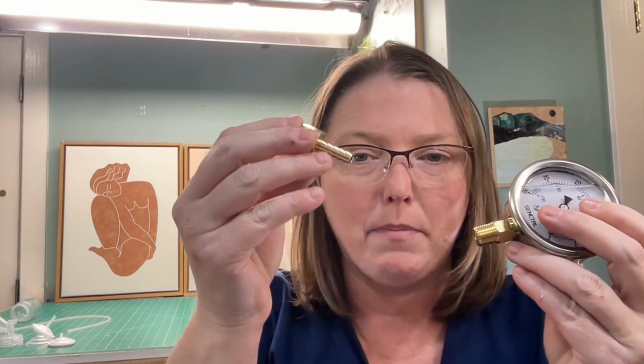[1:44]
Hi, my name is Avery Young, and in this video, I want to show you how to make a homemade pump gauge so that you can tell how strong the suction is in your pump and how well it's working for less than $20.
So lots of people have momentary drops in their supply at some point along their pumping and feeding relationship. And a lot of times that drop in supply can make us panic because we think that our milk supply is going away. And then we get into this doom spiral about what that means about our milk supply and our ability to feed our baby and all the bad things that come along with that.
So here's how you can make a gadget that can test how well your pump is working or how strong the suction is in your pump for under 20 bucks. What you need is a pump gauge, which is specifically a vacuum gauge, because your pump is pulling air. And what we want to know is how hard or how strong is that pull or that suction that your pump is making.
So here's your pump and here's your gauge, and we just have to figure out a way to connect the two. So what we're going to do is get an adapter that makes a plug that lets us put it inside your pump flange. I'm probably going to make some of the names up. It'll totally be wrong, but I can put the links below, and I know what sizes I needed because I've tested a lot of them before I made this video. So I can make sure that you get started off on this a little bit easier than I did.
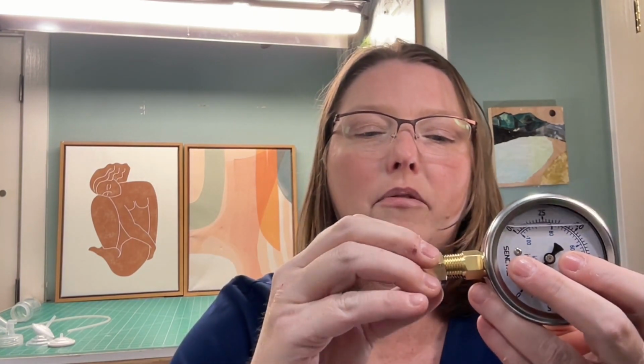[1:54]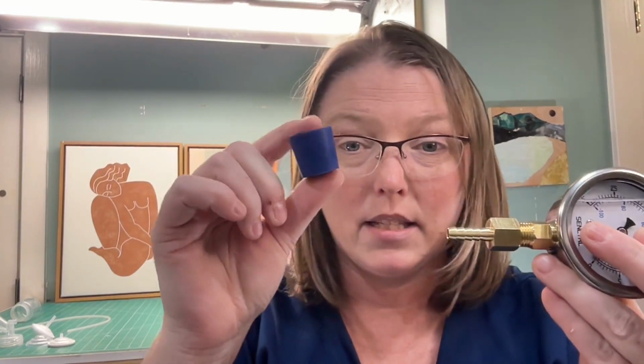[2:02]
So the first thing that you're going to need is a way to make this smaller so that we can fit this into the stopper that we're going to use to put this inside of our pump flange. This is called a coupler, I think. Specifically, it's a female coupler because it has a receiver, and this part over here is the male. It's barbed, and I wanted it to be barbed so it would stick into this stopper really well. And this is a fourth of an inch right here. So it's a fourth of an inch female that you can just screw right here on the bottom of this.
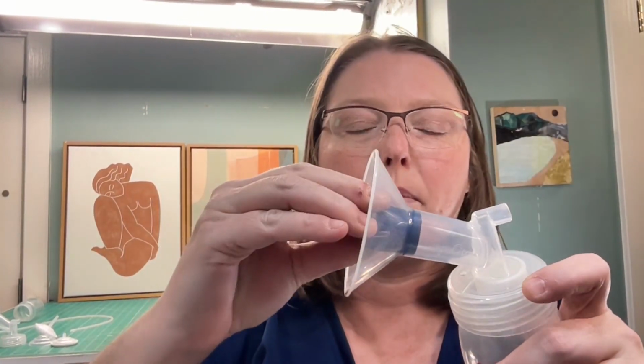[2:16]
The next thing that you're going to need is a stopper. We want to be able to put this into your pump flange and have it be a really nice snug fit so that no air is escaping around the sides. These stoppers come in different sizes, and I've tested those too and got them wrong. So I want to make sure I drop the sizes below so that you won't get them wrong.
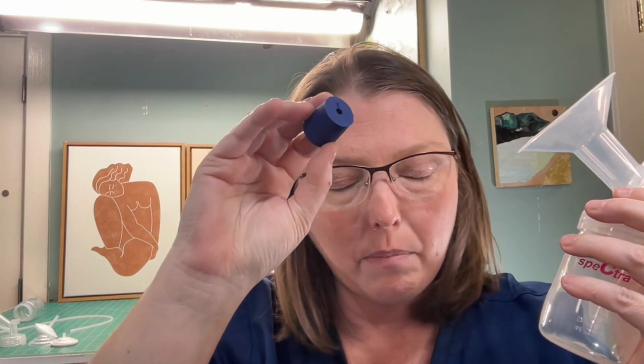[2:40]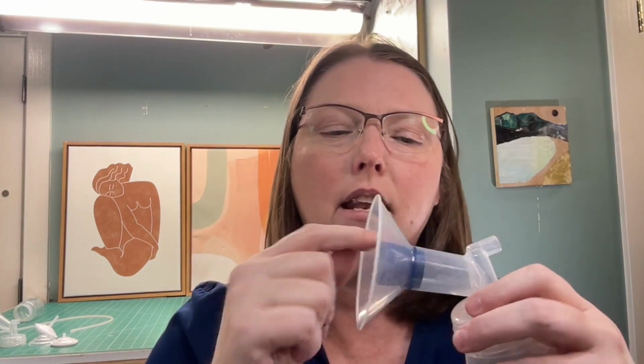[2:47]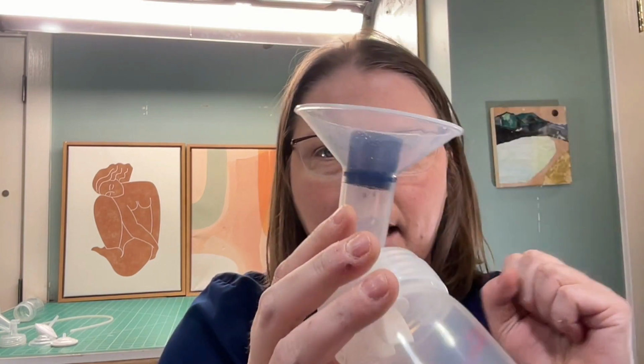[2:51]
In a standard 24 millimeter flange, which is what most pumps come with nowadays, the number 5 stopper right here fits very nicely into this. So it's really nice and snug, and then no air can escape around the side. And you can actually see around the ring that it's making a nice seal.
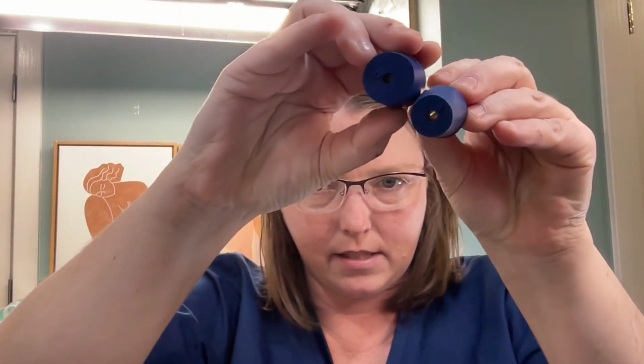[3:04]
Now, if you don't have a 24, if you've sized down and you've gotten rid of your smaller sizes, then you can also use a number 3. So this number 3 is much smaller. You can see the diameter difference between these. Can you see that? This one's smaller. So this one fits really well into flanges that are smaller than this. So you probably can go all the way down to like a 15 or so with this number 3. So having both of them can be handy if you're also a lactation consultant and you want to be able to test different sizes.
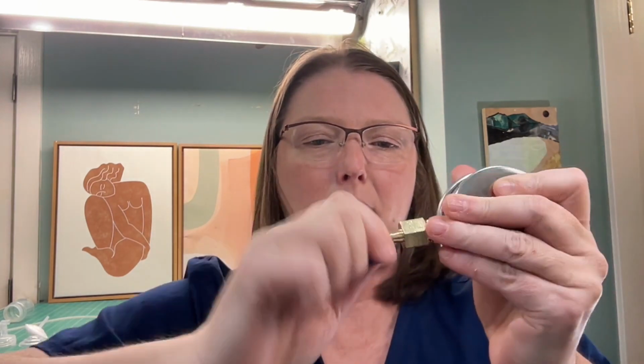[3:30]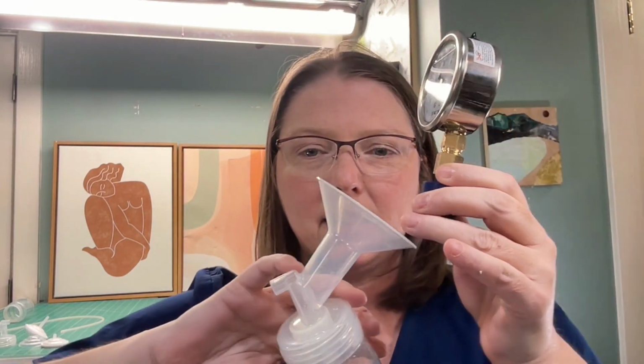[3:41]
So then all we need to do is take this stopper and put it on the barb. So we're going to do this, and I'm just going to twist it up here so that it's nice and snug. And when I've got it all the way in there and it's nice and snug, now I have a way to get this gauge snugly and securely into my pump flange like this. I'm going to push it in there nice and deep.
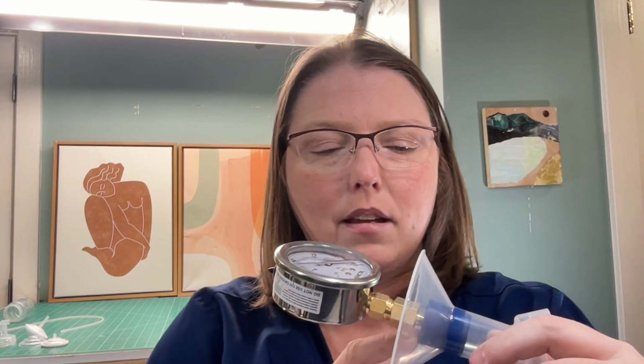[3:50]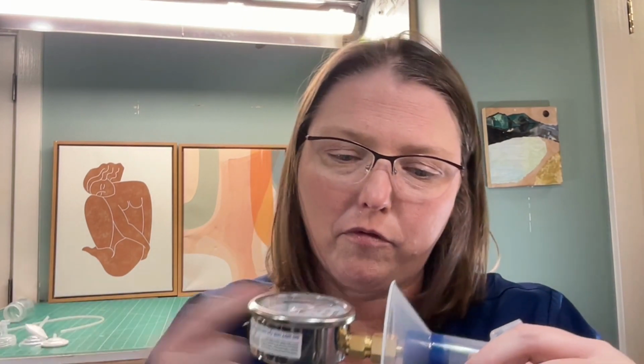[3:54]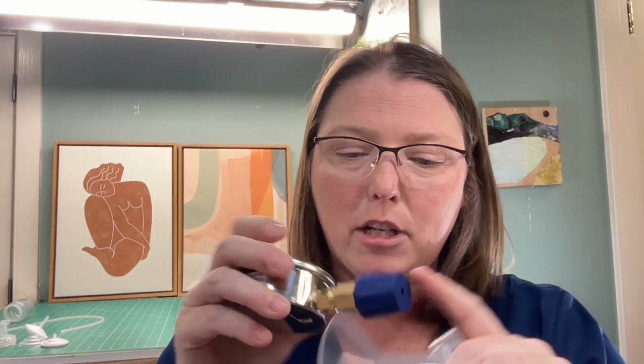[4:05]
By the way, I always want to put the stopper on the end of my adapter before I put it into the pump flange, because if you shove it in there and it gets stuck, you won't have a way to get it out. But with this thing, it's really snug on here, so I can push this in and pull it out really easily. So make sure you put this on first. So we're gonna put this on first, and now we have this set up exactly the way we want it to go.
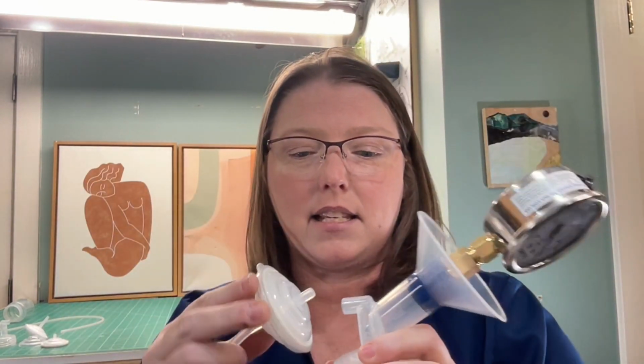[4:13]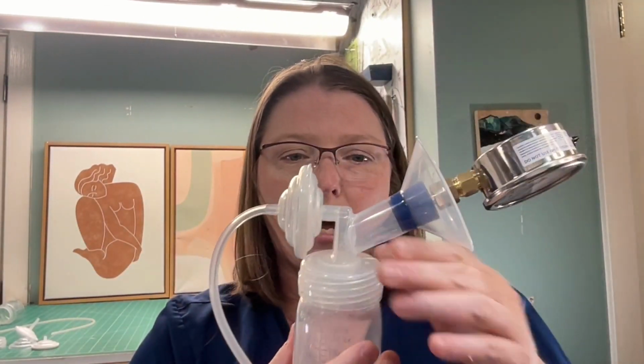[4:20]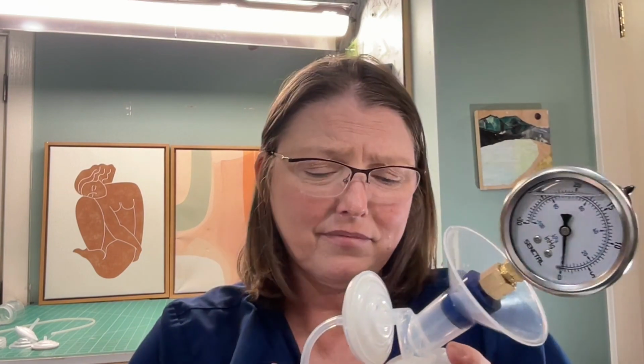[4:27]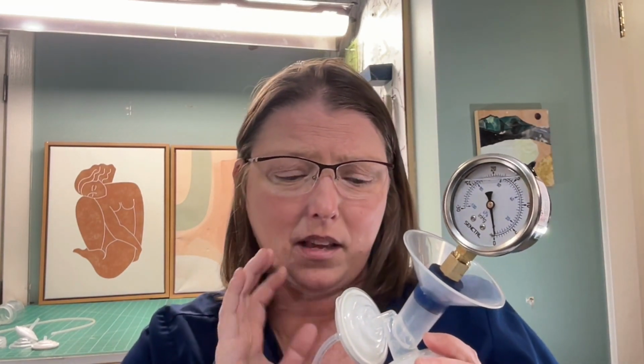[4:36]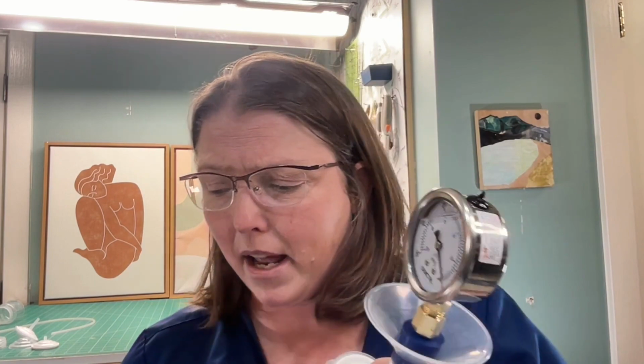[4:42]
So I'm gonna take this backflow adapter, because Spectra has to have these in order for the pump to work. So now I have this set up exactly like it is supposed to be. And I want you to know that since I'm doing this as a scientific experiment, I totally tried to use the parts that came with the Spectra to the extent that I could. But I've had this pump for a while, and so some of these parts are not original to it. Specifically, the membrane is not original to it, and I don't know if this hose is original to the Spectra or not. But now I can turn it on.
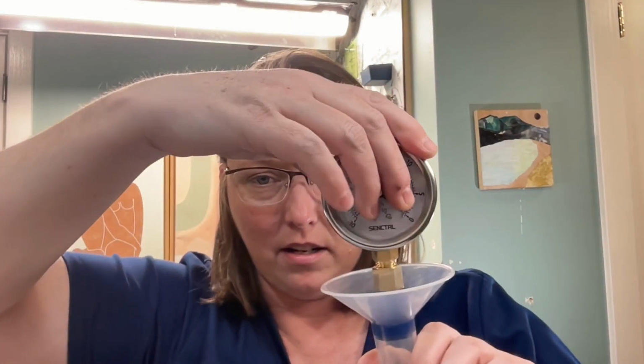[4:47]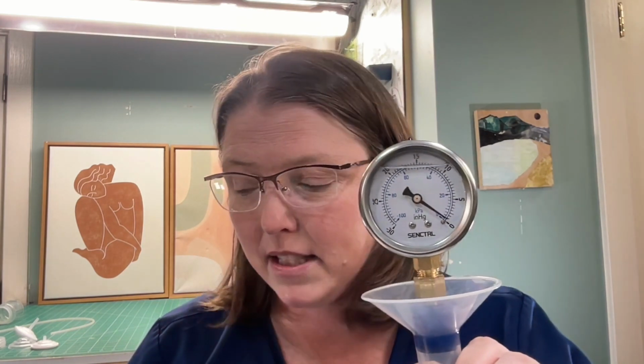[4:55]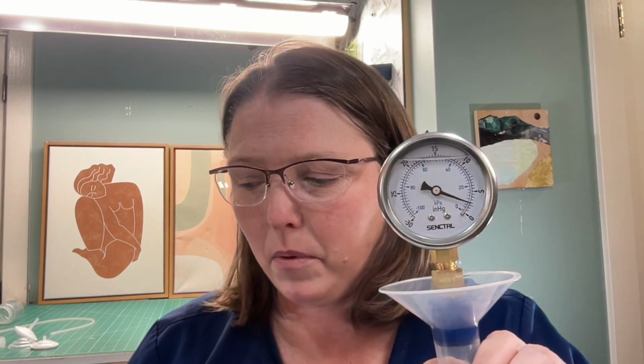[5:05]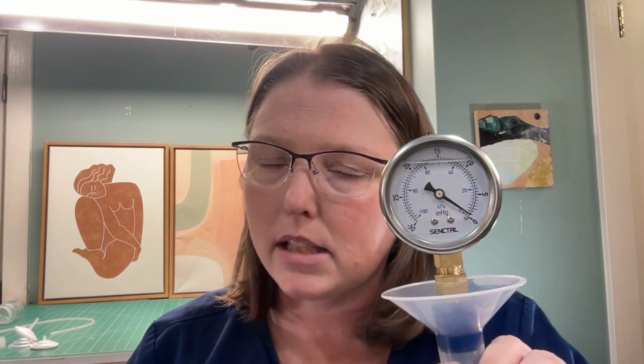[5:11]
I'm going to put this here. There you go. And you can see that this is actually pulling pretty well. Now, I actually started this on 12, which is the highest setting for this pump. And I'm going to show you what happens as I turn it down. You'll start to see that the suction gets less and less. And when I get all the way down here to 1, now it's not pulling very much at all, which is exactly what I would expect from my pump. I would expect there to be a big difference between suction number 1 and the highest pump setting.
So now that you've tested your pump, what do you do with that data? The first thing you want to make sure is that your pump is pulling close to or more than potentially what the maximum suction value for your pump is. And your manufacturer publishes that, but I also have a link below, which you can click on to get to a chart with the common published numbers so that you can see how your pump stacks up. Now, this isn't an exercise in precision, so it doesn't matter if your pump is within 5 or 6 millimeters of where it's supposed to be. We're just trying to get a general idea if your pump is still pulling pretty strongly.
And you will have to convert, because this pump doesn't measure in the millimeters of Hg that your pump is stated in. It measures more specifically in kilopascals. And I have a conversion chart for you so that you just want to see what's going on to make sure that you're in the ballpark. Because if you turn your pump up and turn it down and nothing changes, or you turn it on and nothing's working, or you get a baseline for your pump and then you test it again in a month or so and it's much less, then that tells you that your pump isn't working as well as it could. And the thing you want to blame then is your pump and not your body.